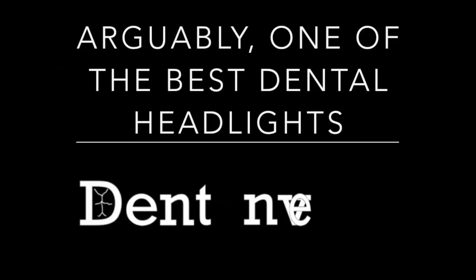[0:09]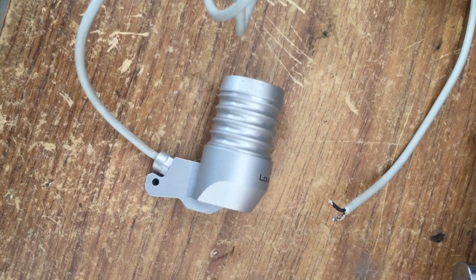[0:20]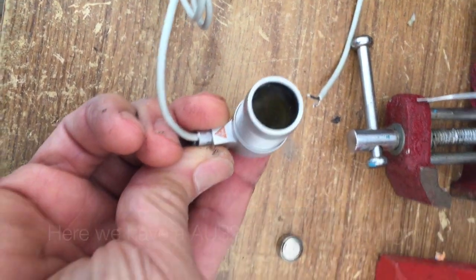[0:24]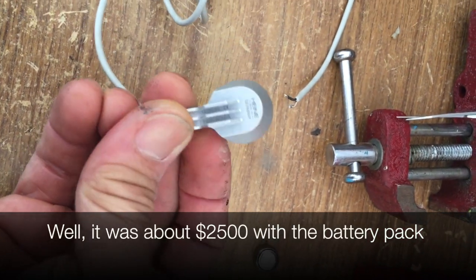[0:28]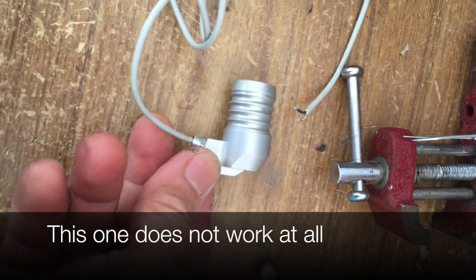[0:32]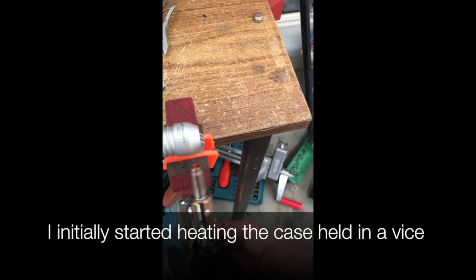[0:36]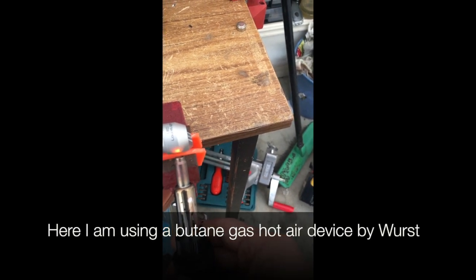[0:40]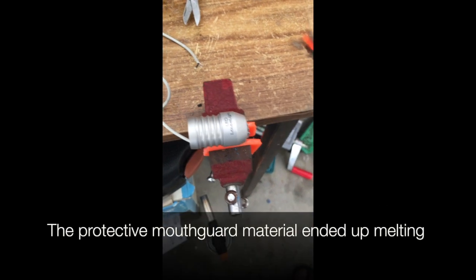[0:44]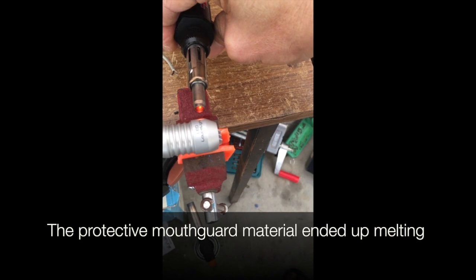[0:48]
$2,500 dental headlight. Well, it was about $2,500 originally with the battery pack. This one doesn't work at all, and we thought we'd try to fix it. I initially started heating the case in a vise, and here we're using a butane gas hot air device made by Wurst. The protective mouthguard material ended up melting with the heat produced.
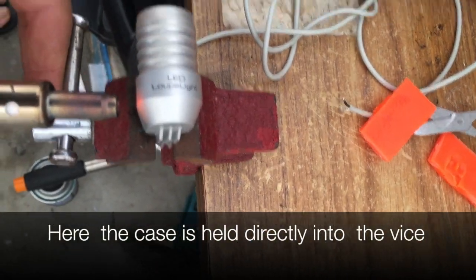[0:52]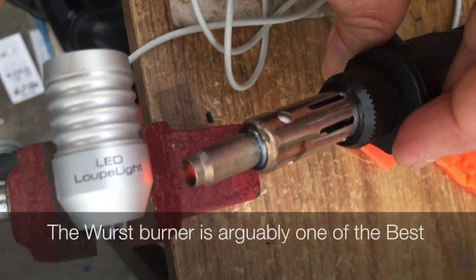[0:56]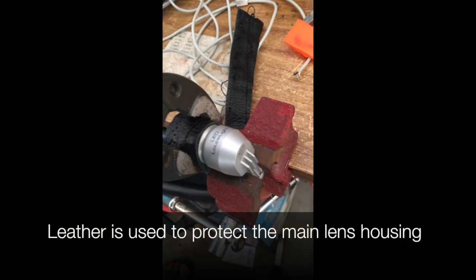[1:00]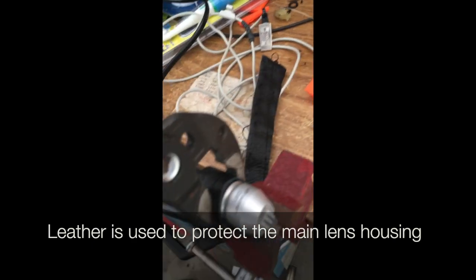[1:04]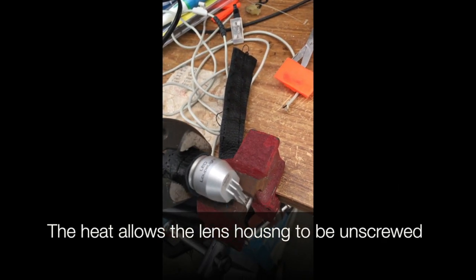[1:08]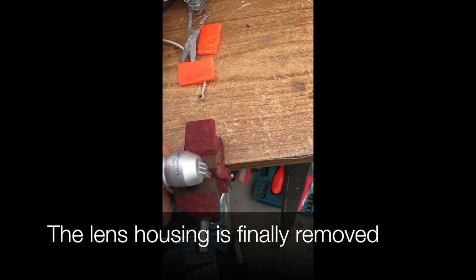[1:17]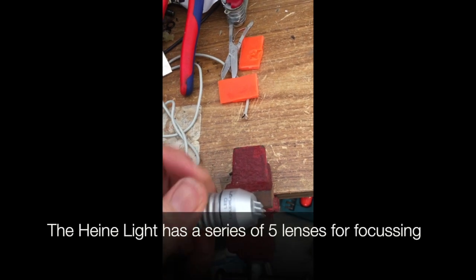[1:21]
Here we've got the case held directly in the vise, and then we're heating it with the Worst burner. Leather is used to protect the main lens housing, and we grip it with a pair of pliers. The heat allows the lens housing to be eventually unscrewed. The heat has to be extremely high because the glue they used is very strong. The lens housing is finally removed.
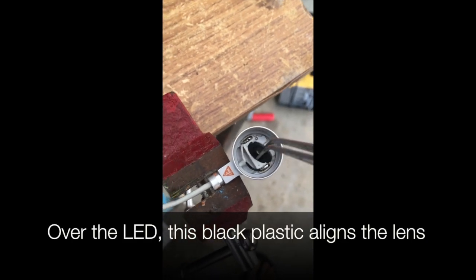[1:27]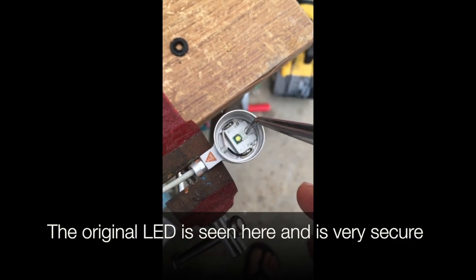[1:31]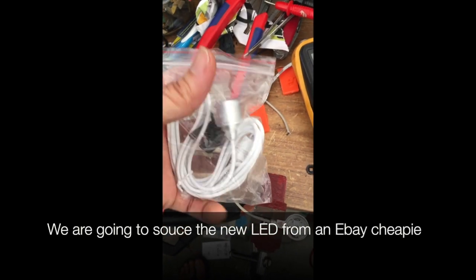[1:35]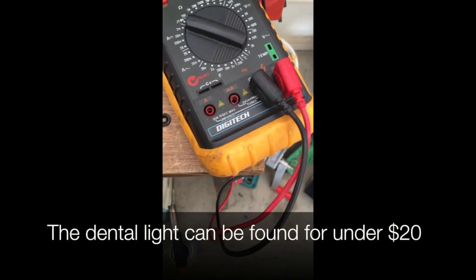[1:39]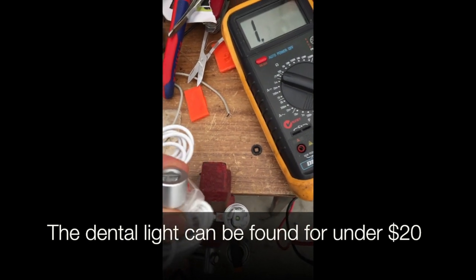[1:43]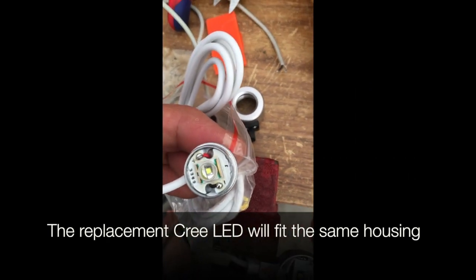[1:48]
The Heine light has a series of five lenses for focusing. Over the LED there's a black plastic which aligns the lens. The original LED is seen here and it's very secure. We're going to source the new LED from an eBay cheapie. The dental light, the cheapie one, can be found for under $20. The replacement Cree LED will fit the same housing because it's about the same size.
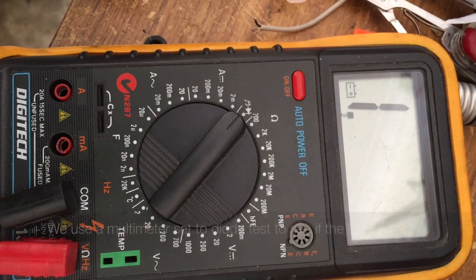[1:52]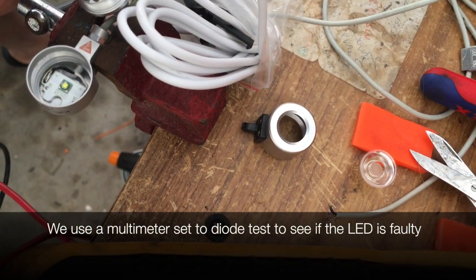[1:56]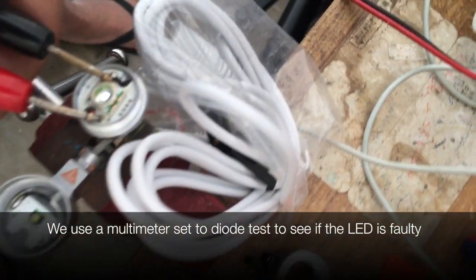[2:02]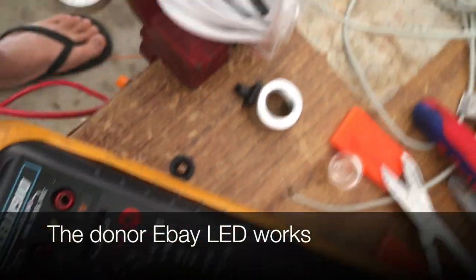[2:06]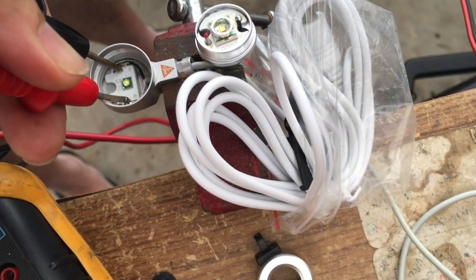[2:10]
See, we use a multimeter set to diode test to see if the LED is faulty. So putting the multimeter probes on the good new LED shows that it's working, and then we put it on the Heine light and nothing's working, it's dead as a dodo.
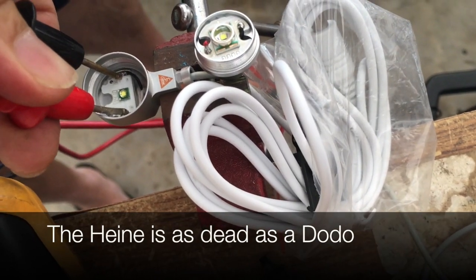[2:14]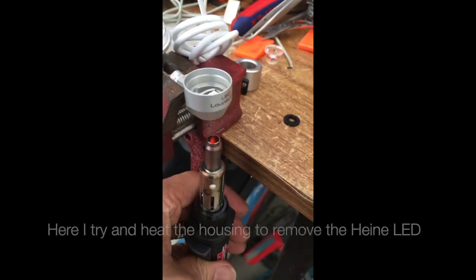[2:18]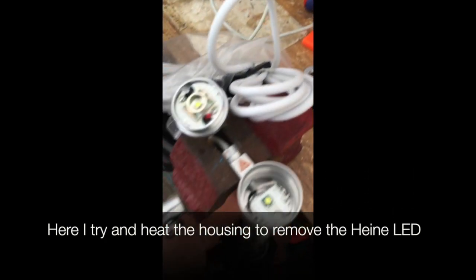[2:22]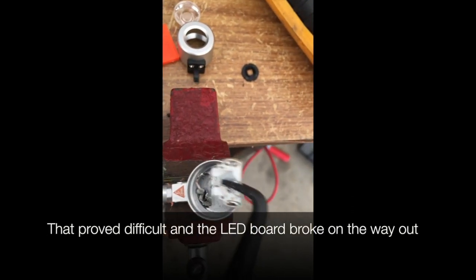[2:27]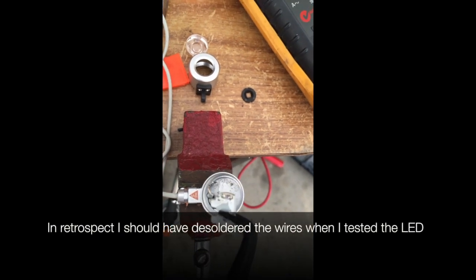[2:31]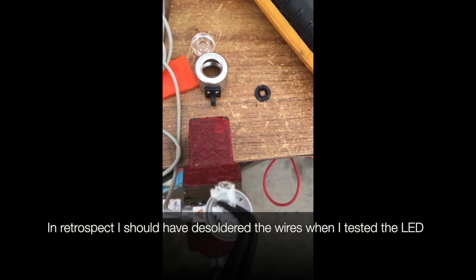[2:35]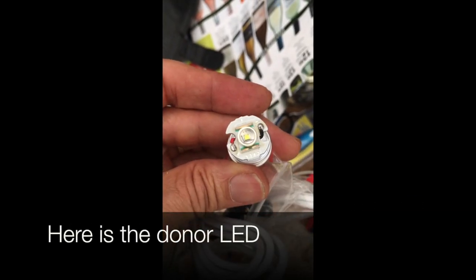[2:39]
Okay, here I try and heat the housing to remove the Heine LED board. So we've got the heat right underneath it. That proved really difficult and the LED board ended up breaking out. In retrospect, I probably should have desoldered the wires and then tested the LED in case the wires were causing the problem. Here's the donor LED before we desolder it.
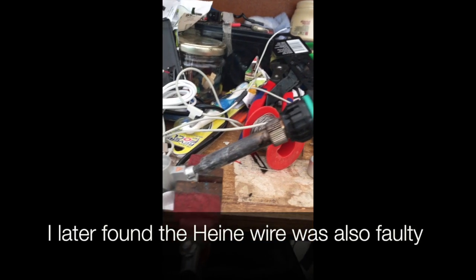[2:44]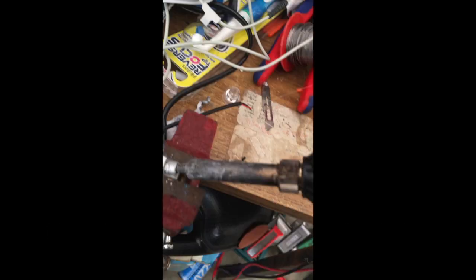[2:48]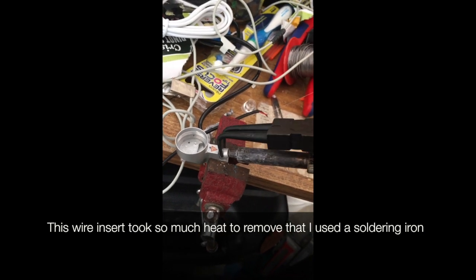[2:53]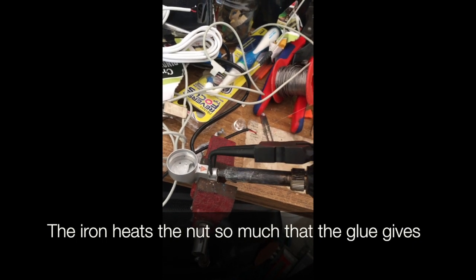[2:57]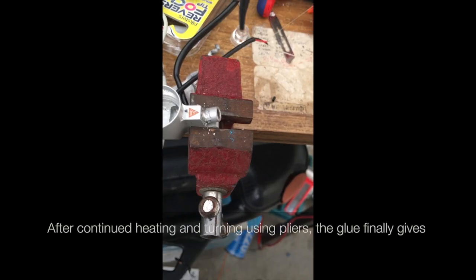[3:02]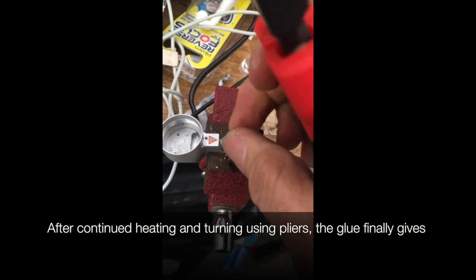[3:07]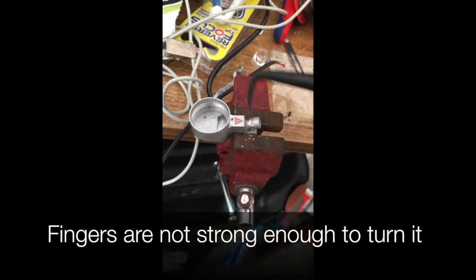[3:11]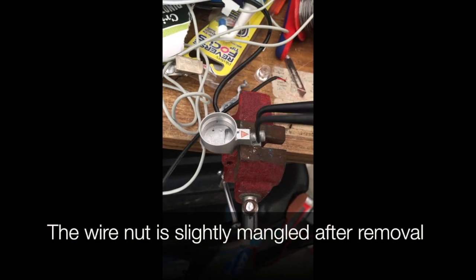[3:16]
I later found that the Heine wire was also faulty when we put the new LED in. So the wire insert took so much heat to remove that I used a soldering iron stuck in there and a pair of pliers to undo the nut. So this shows that the nut was so tight that we couldn't take it off with our fingers. So we're in between turning it, we're heating it with the soldering iron as well.
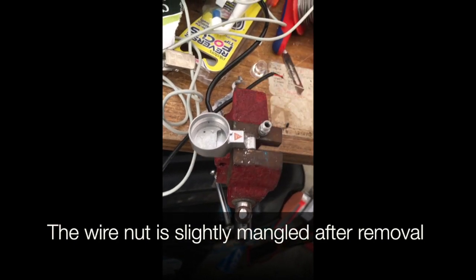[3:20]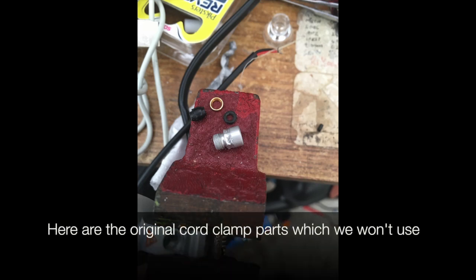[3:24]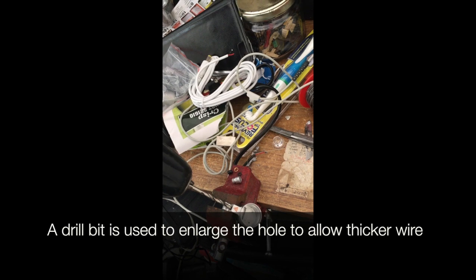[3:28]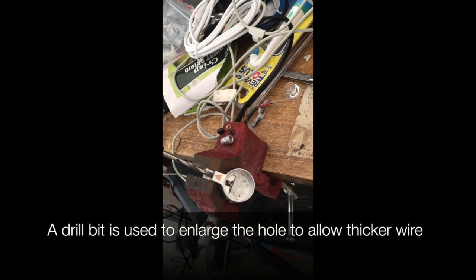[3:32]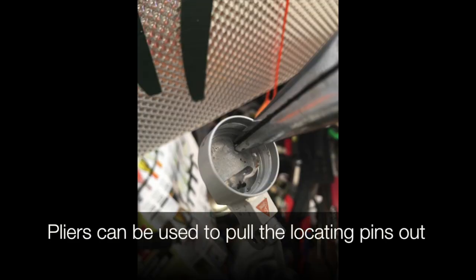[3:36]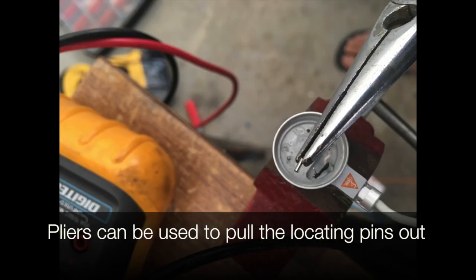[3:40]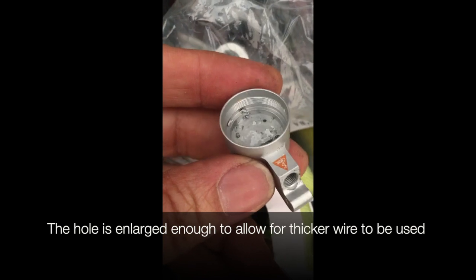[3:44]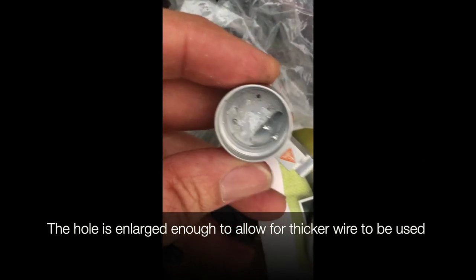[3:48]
So these are all the parts for the original cord clamp, which we won't use. We use a large drill bit to enlarge the hole to allow a thicker wire. We want the thicker wire because it's a lot stronger. Pliers can be used to pull the locating pins out so we can put the new LED board in. The hole's enlarged enough to allow the thicker wire to be used, so we can see. Now we can thread it through like this.
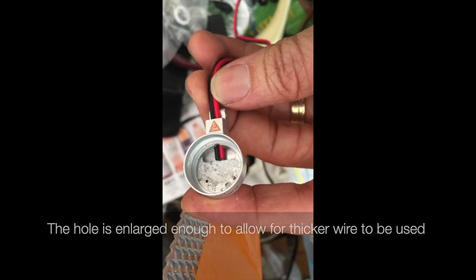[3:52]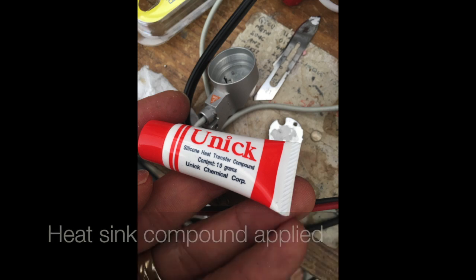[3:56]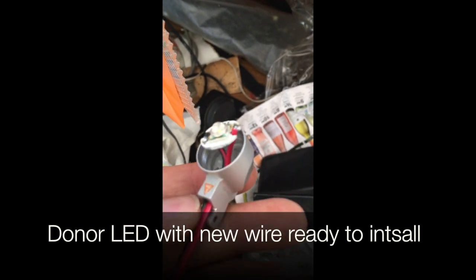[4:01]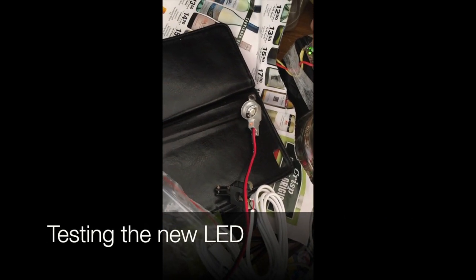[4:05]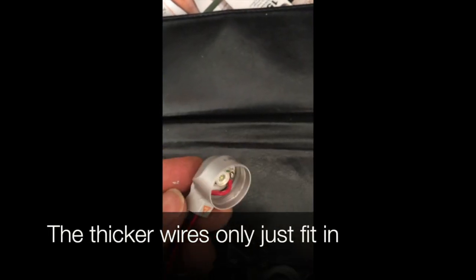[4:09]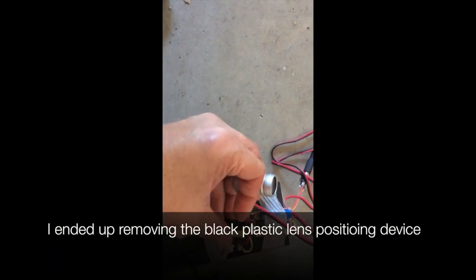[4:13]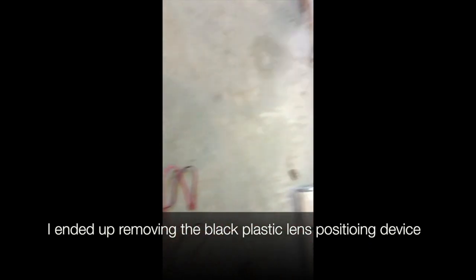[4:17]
And then we make sure we put heatsink compound on the LED board before we insert it. We test the new LED. Yep, that works. Thicker wire will only just fit into the housing. I ended up taking the black plastic lens positioning device out because we couldn't screw the lens in properly.
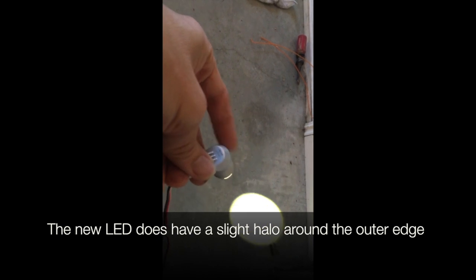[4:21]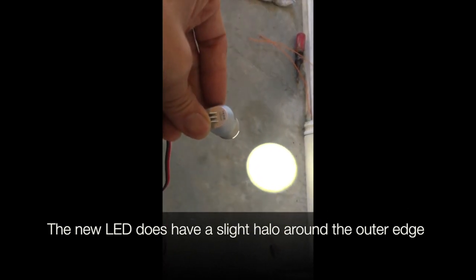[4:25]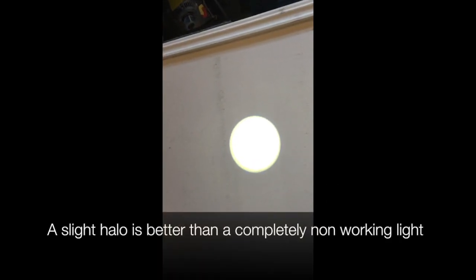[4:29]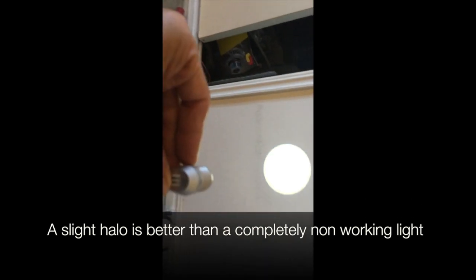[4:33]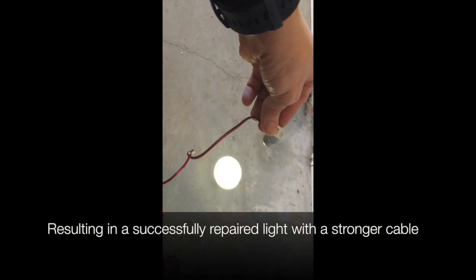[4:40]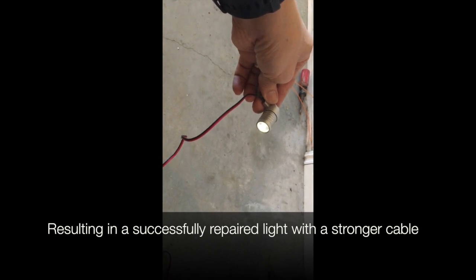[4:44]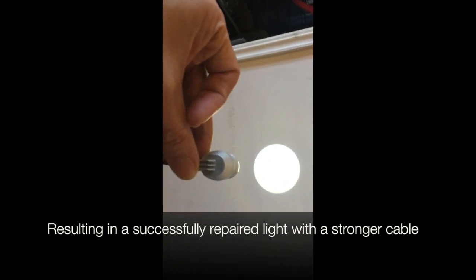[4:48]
Here we're testing it. The new LED does have a slight halo around the outer edge. A slight halo is better than a completely non-working light. As you can see, we resulted in a successfully repaired light with a stronger cable. And thanks for watching.